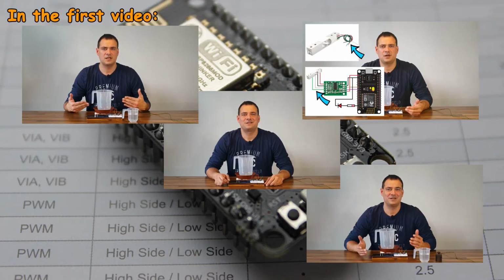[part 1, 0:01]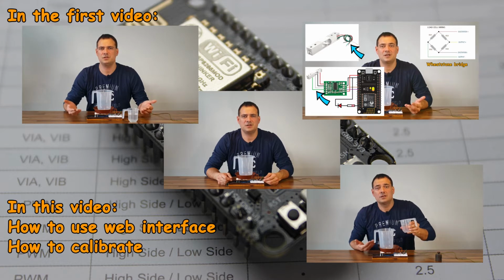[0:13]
In the previous video of this two-part series I showed you how to make a uroflowmetry device for yourself. If you haven't seen the video find it on my channel. In this video I will show you how to use the web interface, how to calibrate the machine and how to use the dedicated Windows program. Coming up!
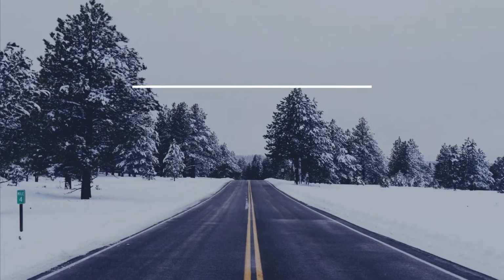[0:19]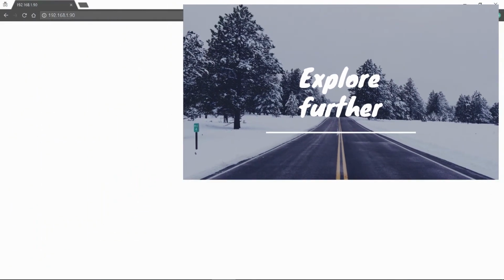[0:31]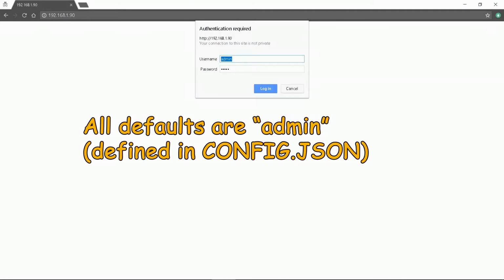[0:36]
We will start by entering the device address into a web browser. Uroflow will ask for the username and password. By default they are both admin. Click login. You enter them at first connection. The main site opens.
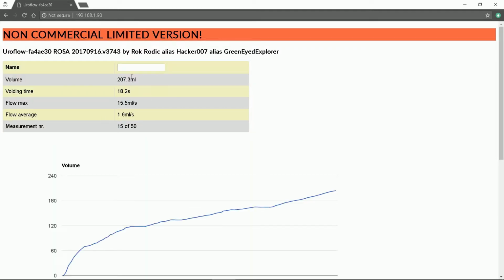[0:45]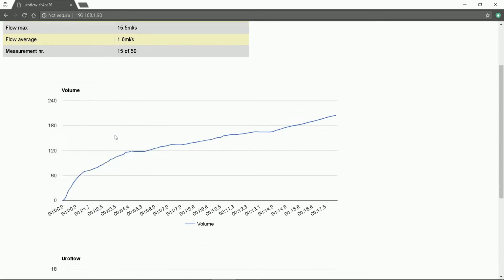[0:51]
Here is the medical report for the free Uroflow version. In the input box you can enter the patient name to make it complete. You can see both graphs. You can check the slopes by moving the mouse over it. Detailed information is displayed.
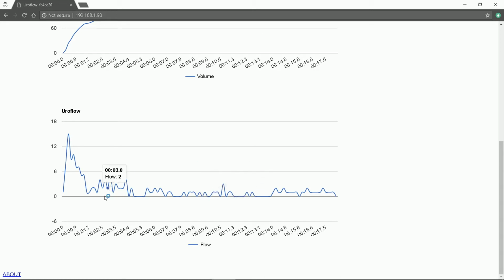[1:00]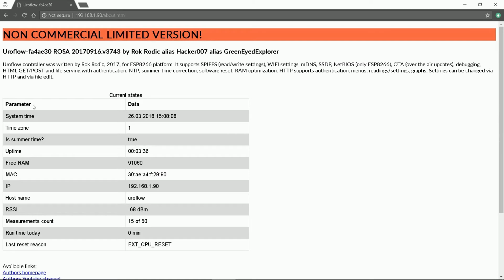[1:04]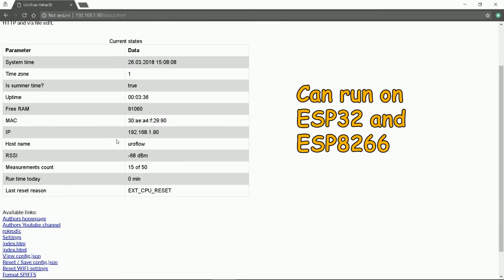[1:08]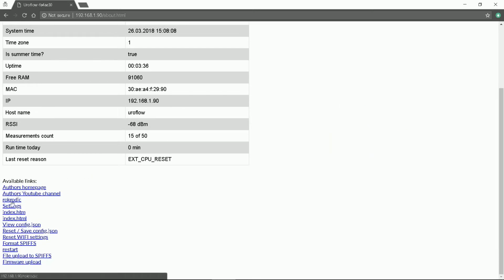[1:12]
At the bottom lies the About link. Click it. It opens the About page with some details about the processor. This demo firmware runs on Espressif ESP32. At the bottom we can see all available links. We will move into settings. Click it.
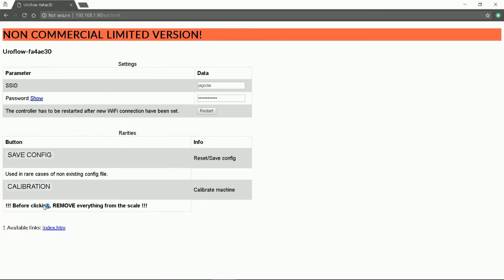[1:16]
Available options here are Wi-Fi settings, configuration and calibration which we want at the moment. Be sure to follow the instructions. Firstly remove everything from the scale. Press calibration.
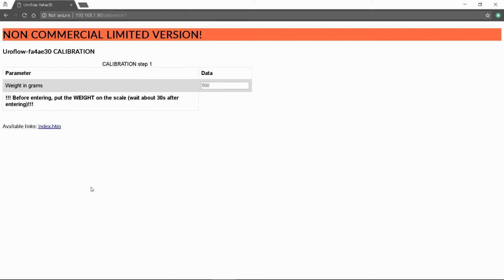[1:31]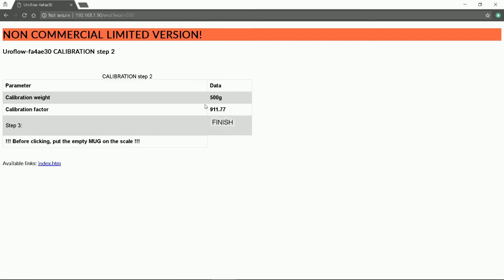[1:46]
Secondly enter your calibration weight but be sure to put the weight on the scale before pressing enter. After entering you have to wait approximately 30 seconds. At the end we finish with the calibration factor which has been saved into the configuration file by now. Lastly we just have to return our empty collecting mug on the tray. The Uroflow device will restart and you can start measuring.
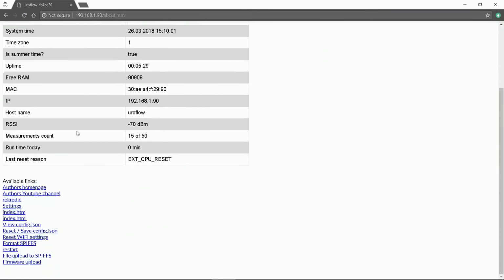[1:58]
The other options we have in the About menu are: View configuration. Reset the configuration. Reset Wi-Fi. Format file system. Restart. File upload.
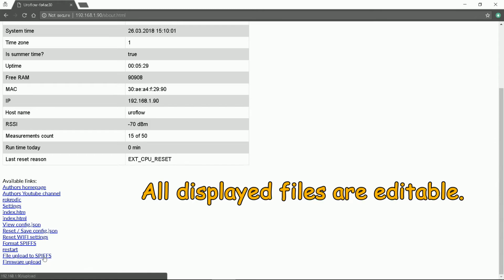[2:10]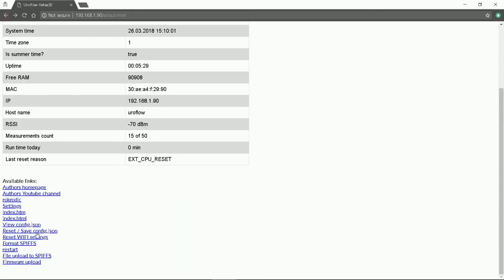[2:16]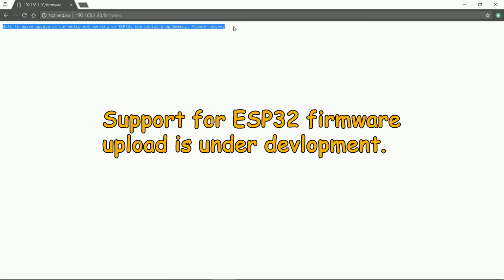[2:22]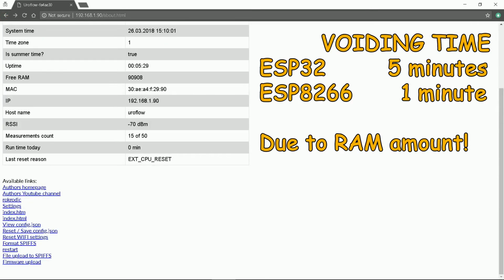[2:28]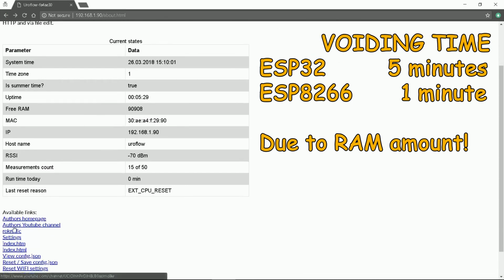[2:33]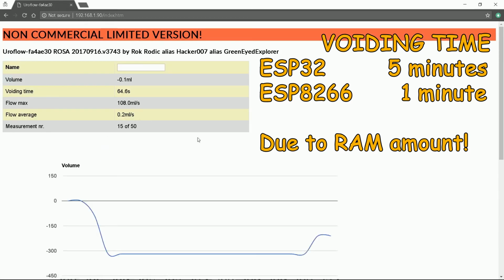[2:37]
If you edit any of the pages just upload new ones. And firmware upload. Due to the current state of the software development kit the firmware upload for now only works when using ESP8266. The main advantage of ESP32 is recording of 5 minute voiding time in opposite to ESP8266 where it is 1 minute. All due to the RAM they have.
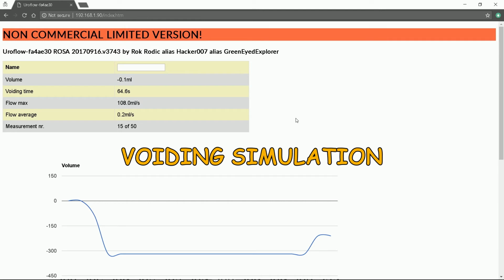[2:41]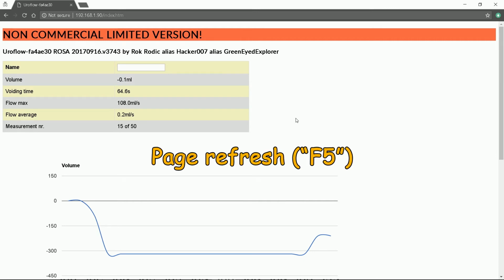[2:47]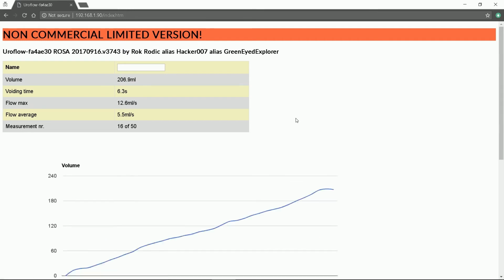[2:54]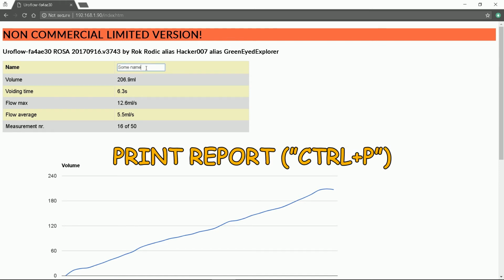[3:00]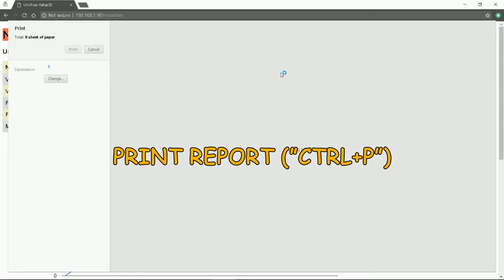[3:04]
Now I will simulate the patient voiding and pour water into the mug. When the LED turns off we just have to press page refresh. That is the F5 key. Here we can see the medical report. I will enter some name. Now we just have to press Ctrl plus P key for print preview and print it.
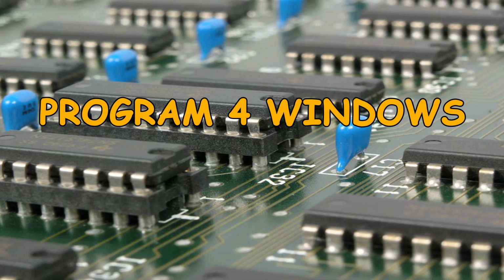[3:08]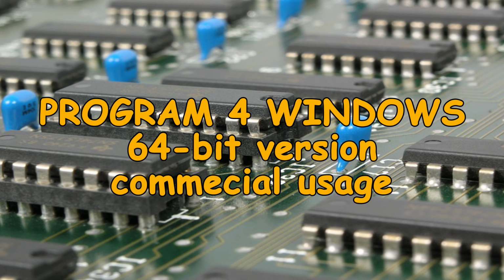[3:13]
Windows program. I wrote a 64-bit program for Windows. When you run it first click the connect button. Then enter patient name and year of birth. The program is still under heavy development. Now press the read button.
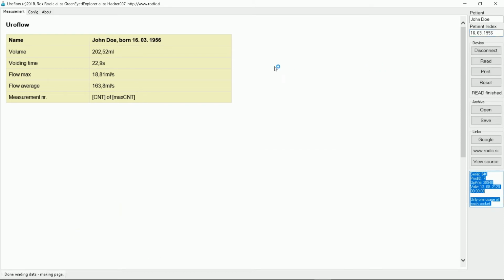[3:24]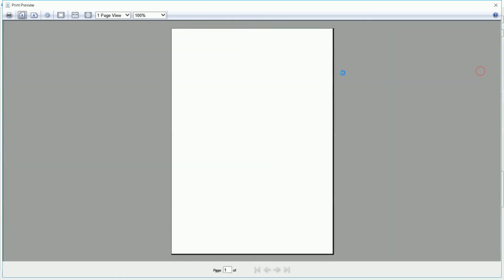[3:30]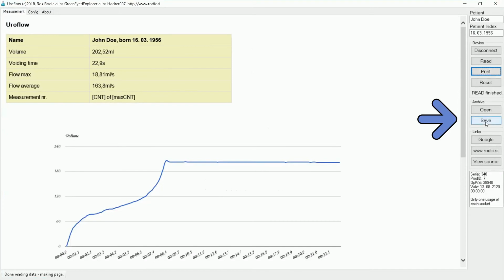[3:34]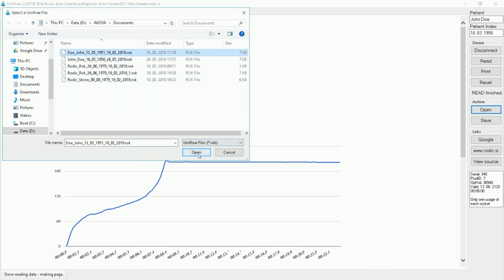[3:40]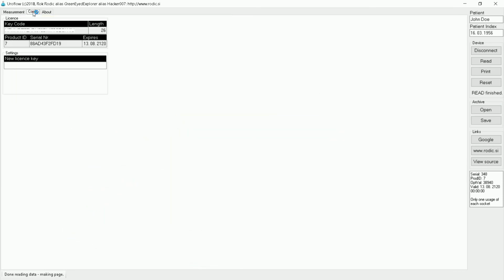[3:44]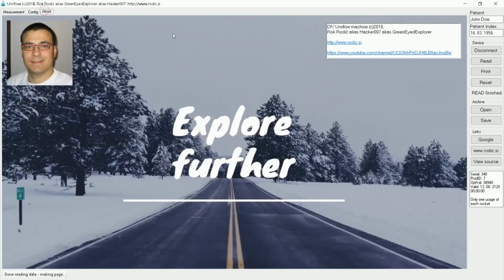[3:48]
The report contains all the data. Now you can print it. You can also save the data in a database. We will open a random previous flow from the database. See the data is different. Other options in the program are config with license key information and about menu.
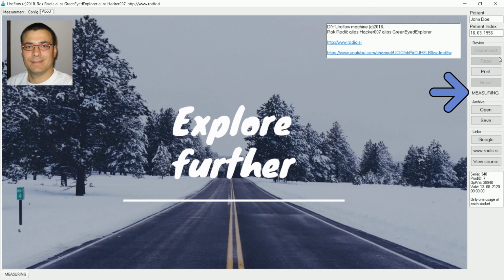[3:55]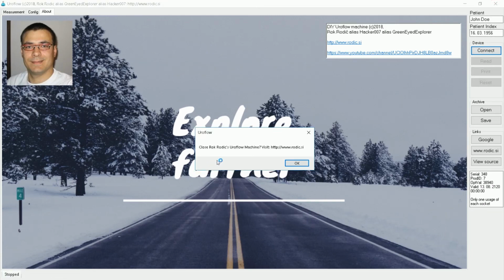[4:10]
Now I will touch the machine to simulate voiding to show you that the program gives you a notice when the patient uses the Uroflow. The read button is disabled while voiding. At the end of the day we just press disconnect and close the program. Here I have to mention the Windows program is intended for commercial usage.
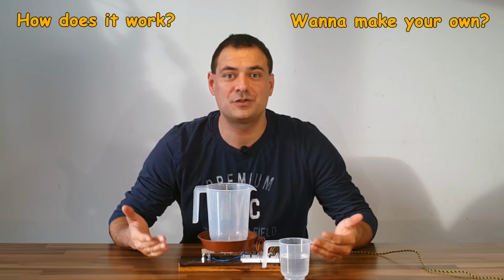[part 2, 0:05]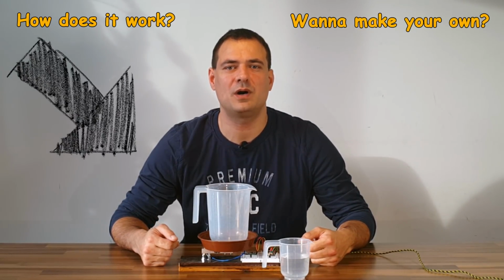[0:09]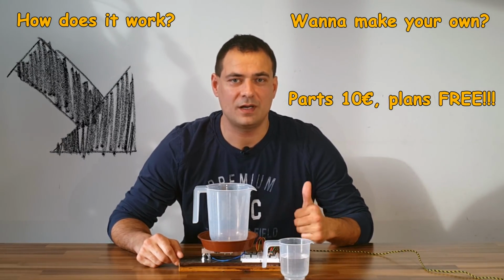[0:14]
Have you ever wondered how a uroflow machine works? Do you want to make your own? In this video I will show you how to make one for around 10 euros. This is video one of a two-part series. Coming up!
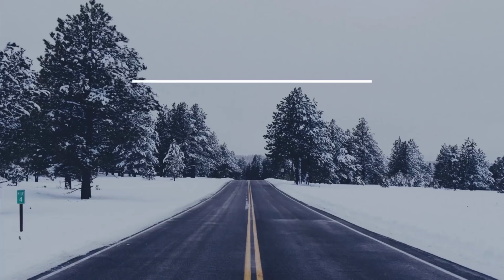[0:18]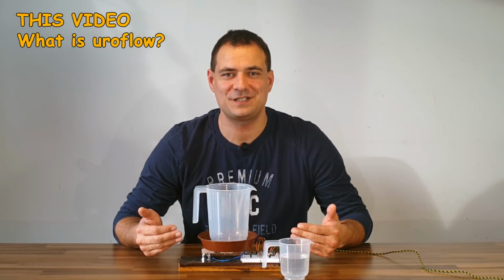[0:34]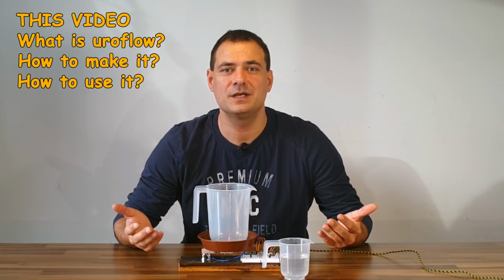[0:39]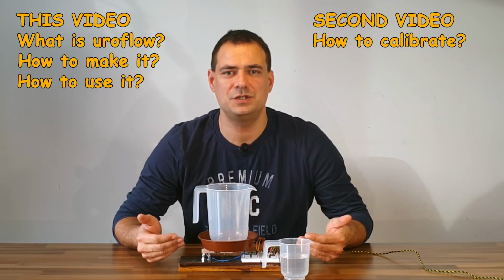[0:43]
In this video we will see what a uroflow machine is, how to make the machine and also see how to use it. In the second video we will see how to calibrate the machine and what my firmware offers.
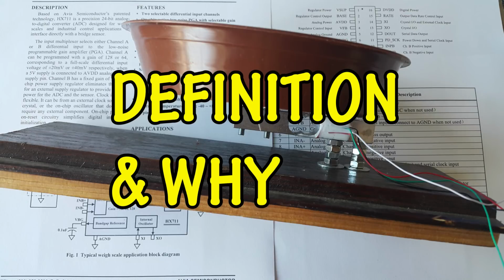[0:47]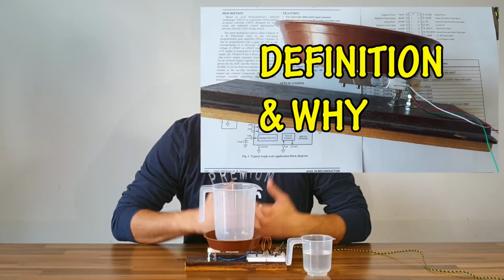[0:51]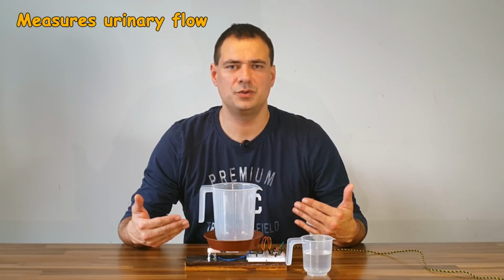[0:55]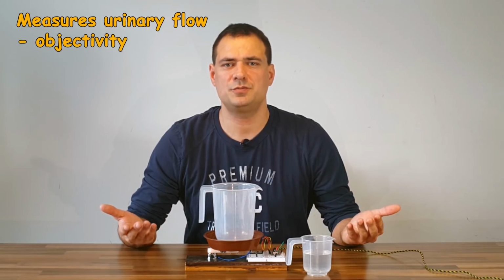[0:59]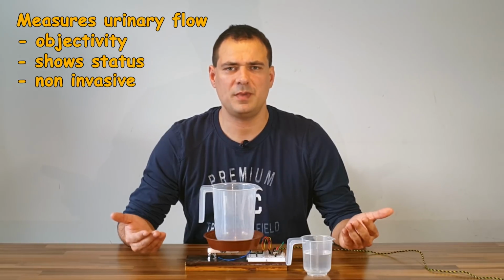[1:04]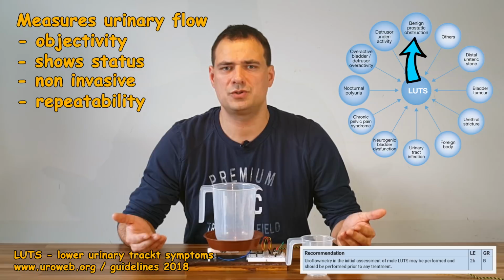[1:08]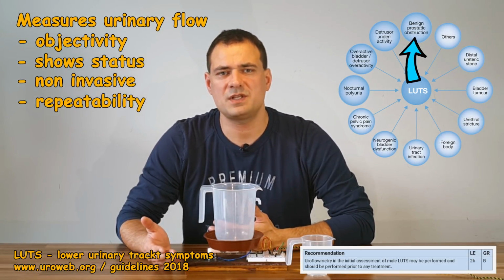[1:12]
Definition and why. First I will explain what a uroflow machine is. It is an appliance which measures how good your urinary flow is when emptying your bladder. It objectively shows patient status to a urologist. It can show many things. The most known is an obstruction, either due to benign prostatic enlargement or other reasons. It is one step of diagnostics called urodynamic studies.
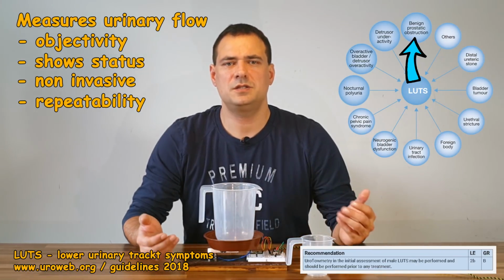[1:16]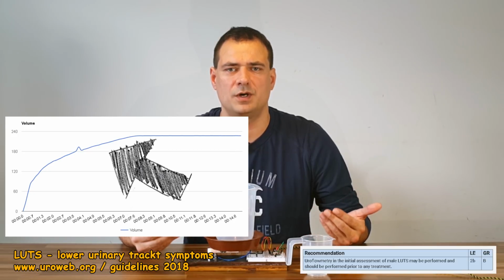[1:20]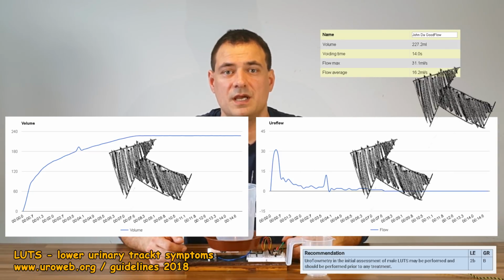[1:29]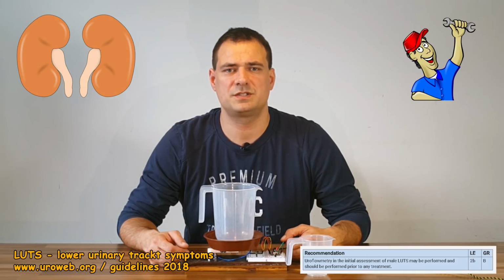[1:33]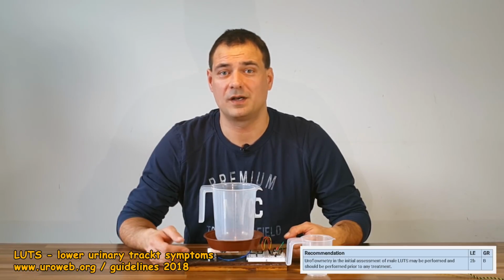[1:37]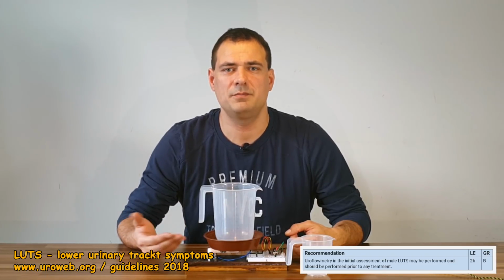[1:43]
It basically is a simple weight scale which shows volume of voided urine, increase of weight of urine in time in a format of flow per time, and some other parameters. As I am a neurologist by profession and electronics geek and handyman by heart, I was very keen on making one. My purpose here is to popularize this device among men as it can objectively reveal many problems.
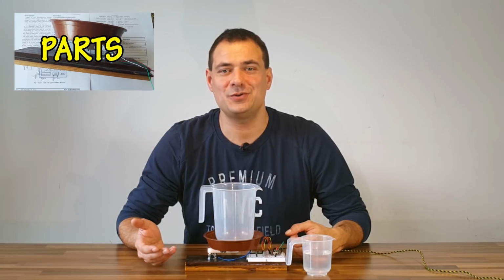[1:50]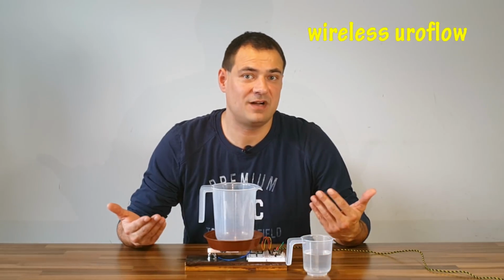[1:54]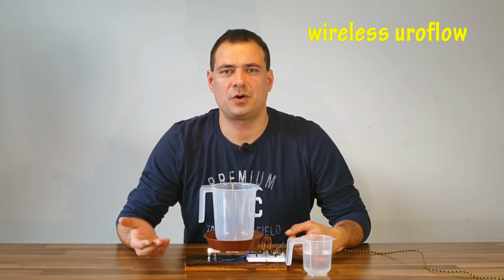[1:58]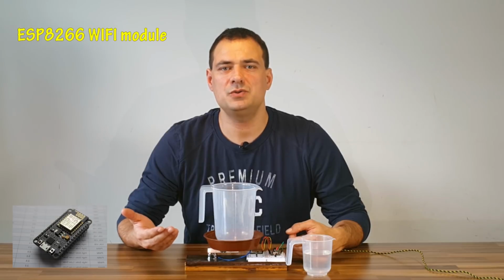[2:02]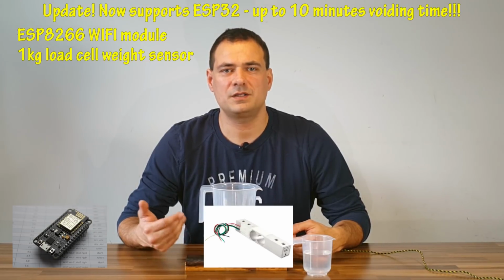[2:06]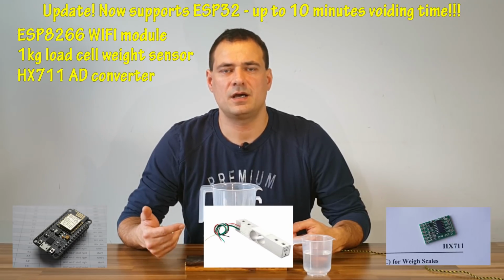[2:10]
Parts. I decided to show you how to make a wireless uroflow as an added value. It is even cheaper. Most commercial products are either wired or use Bluetooth. I will use an ESP8266 Wi-Fi module, a 1kg digital load cell weight sensor and an HX711 converter. Hardware is really simple and cheap.
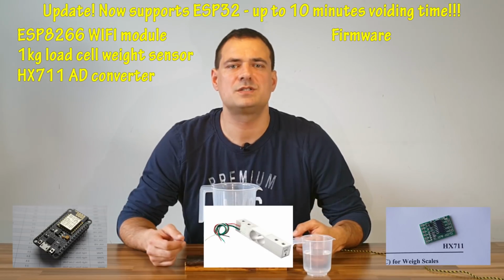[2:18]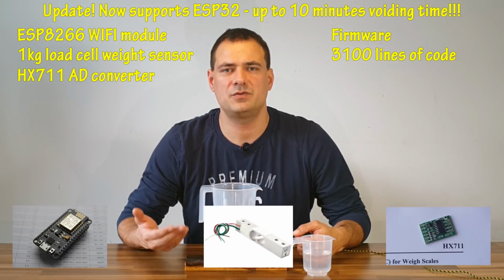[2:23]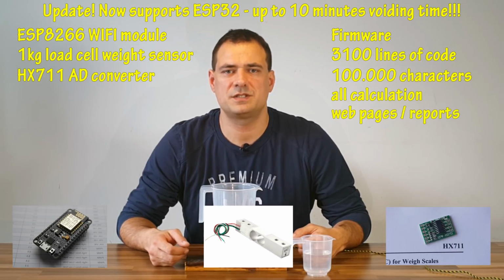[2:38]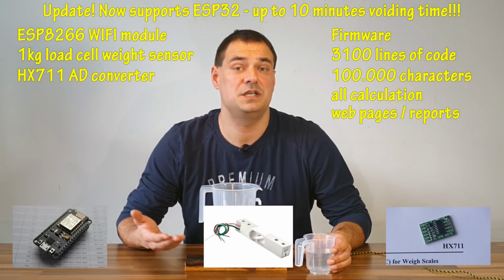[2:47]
The biggest challenge about making one was to write the program for it. It contains 3100 lines of code or 100,000 characters. It took me about 20 hours of programming and thinking. All the processing and calculations are done on the microcontroller itself. User just has to visit the web page and see the report and print it. No additional dedicated PC for the uroflow machine, which means even lower cost.
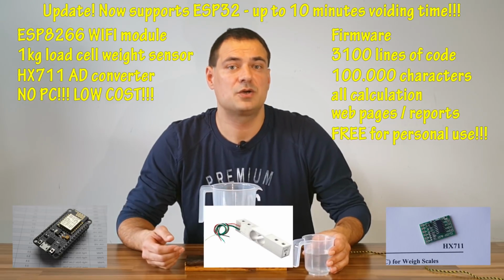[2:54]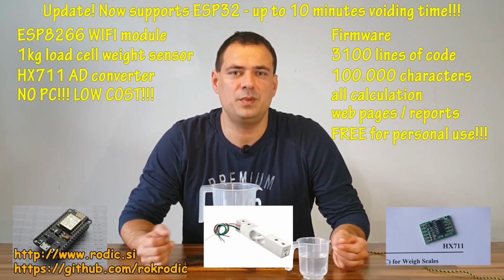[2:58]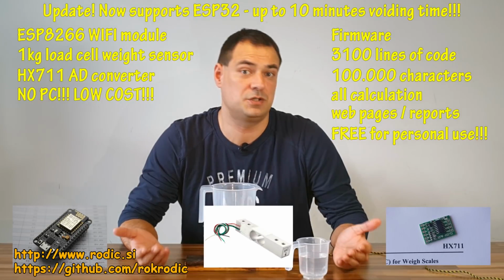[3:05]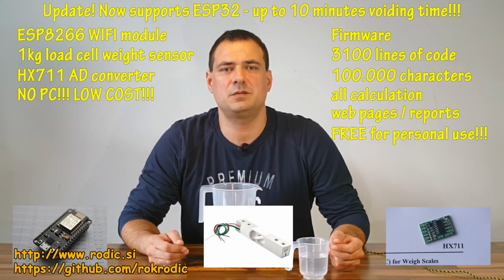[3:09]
I offer my schematics and firmware for free for personal use. Commercial usage is negotiable. Data can be found on my home page and my GitHub page. I also provide the version with nomograms for better interpretation and even a dedicated Windows program with database for storage.
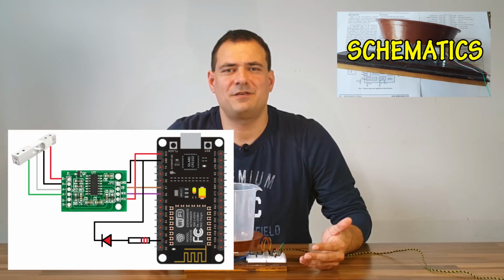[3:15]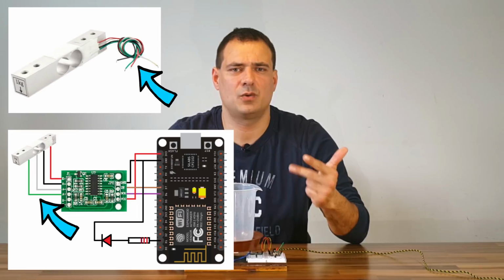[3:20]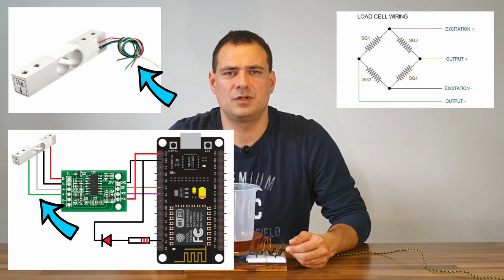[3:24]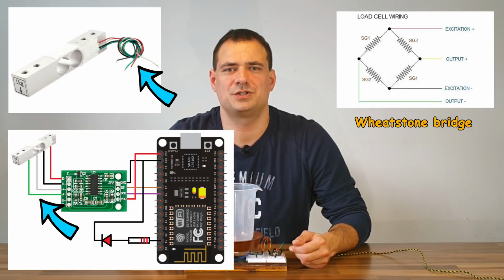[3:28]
Schematics. The schematic is very simple. The weighing element has four wires: red, black, white and green. They come from strain gauges on the load cell. Strain gauges are organized in a Wheatstone bridge. That's why there are four wires.
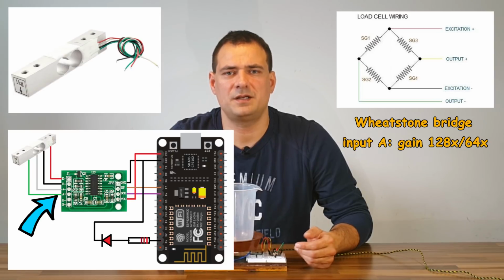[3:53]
They are connected to an HX711 chip. Red goes to E+, and the black one to E-. E's represent excitation. Meanwhile, white goes to A- and green wire to A+. They are inputs. A input can be programmatically defined as gain of 128 or 64 while input B has a fixed gain of 32. We will use input A with gain of 128.
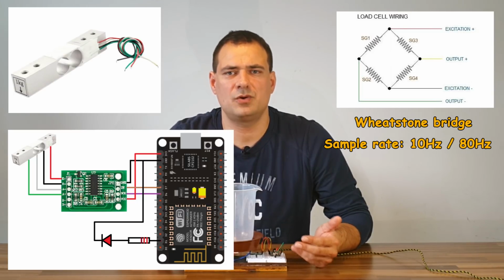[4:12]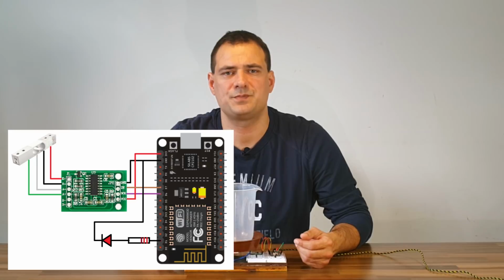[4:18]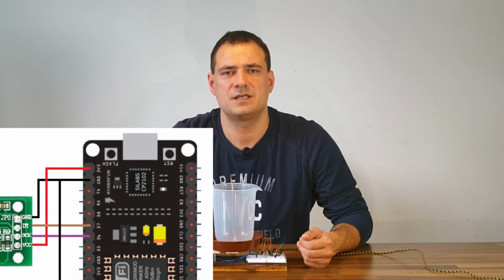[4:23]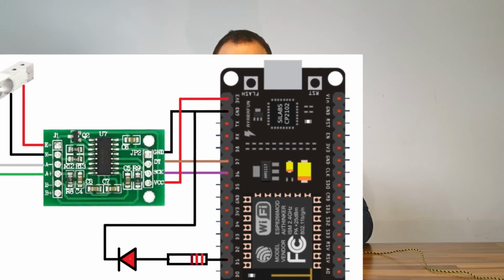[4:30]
Other selectable thing is sample rate. We can choose 10 or 80 Hz. I selected 10 Hz as it has lower noise and gives enough precision. Connection to microcontroller has two communication lines, clock and data line. The only other thing used in this version of the machine is a red LED which lights when there is an ongoing measurement or calibration procedure. Calibration procedure is also initiated via Wi-Fi.
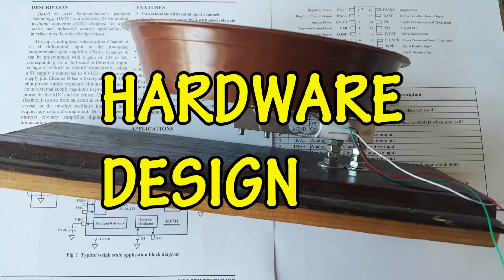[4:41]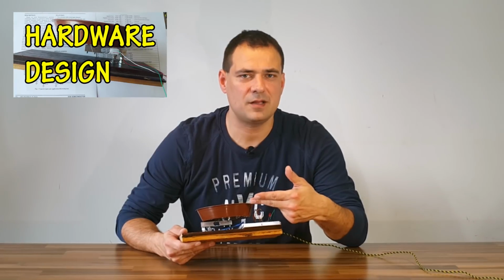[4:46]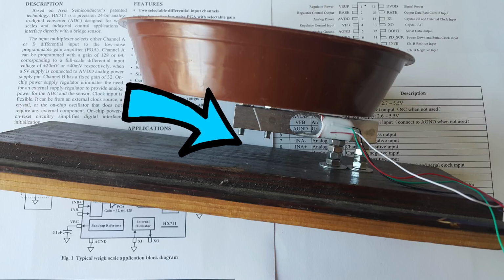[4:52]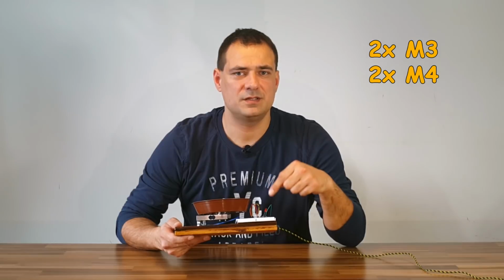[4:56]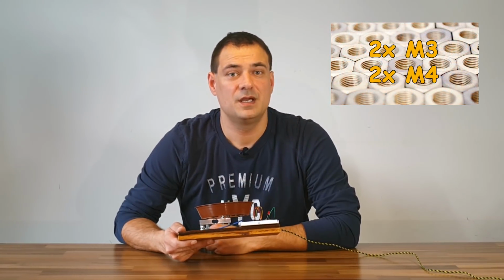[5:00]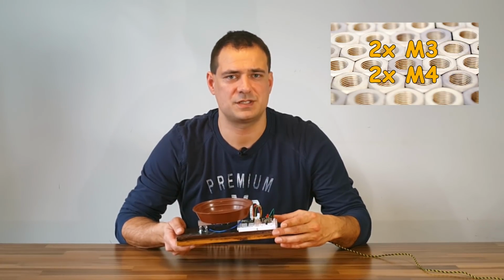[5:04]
Hardware design. Here you can see how a weighing element is mounted. Tray is on the upper side of the weighing element. The other side is mounted to the bottom plate. You will need two M3 and two M4 screws and some nuts for spacers. You can see the prototype uses breadboard for connections. If you want to buy parts, the links are in the description below.
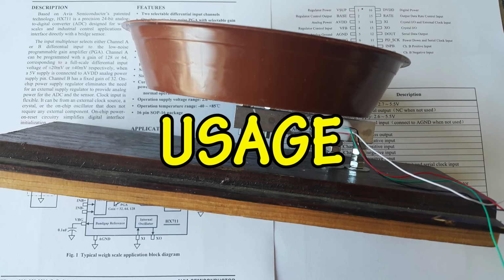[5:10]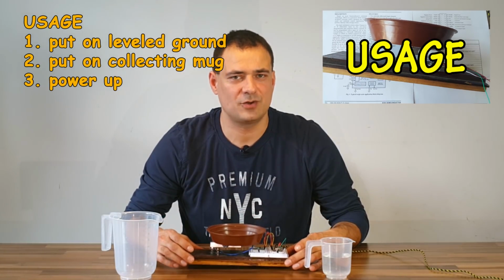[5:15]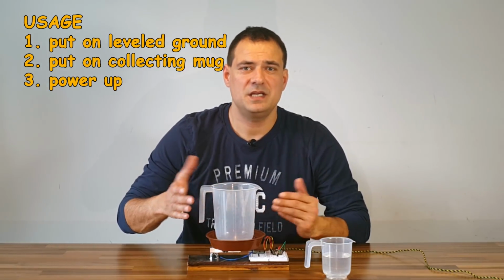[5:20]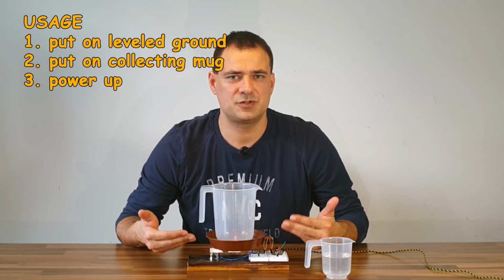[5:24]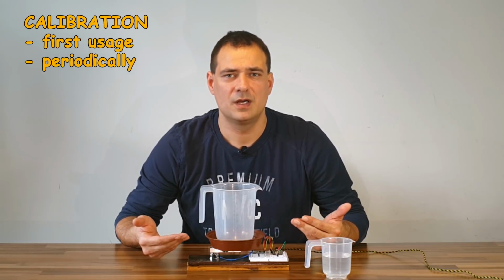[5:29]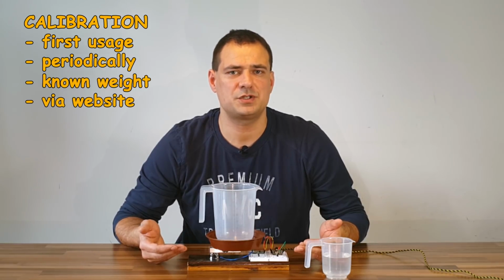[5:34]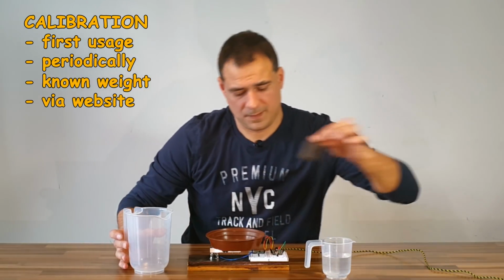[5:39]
How to use? First you will have to put the appliance on a level ground. Put a collecting mug on the tray. If it is heavy, leave it there for a few minutes for the load cell to stretch. If you use the machine for the first time or want to recalibrate it after a certain period of time, you initiate the calibration procedure with a known weight via Wi-Fi. The calibration parameters are stored in the machine itself.
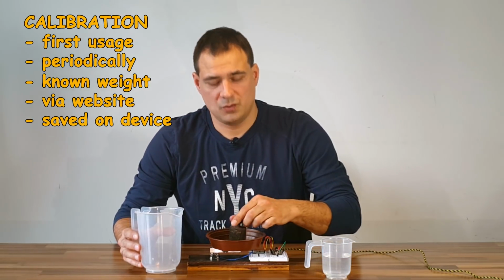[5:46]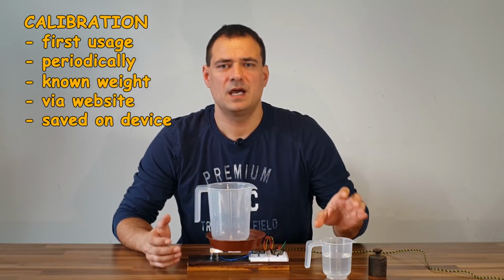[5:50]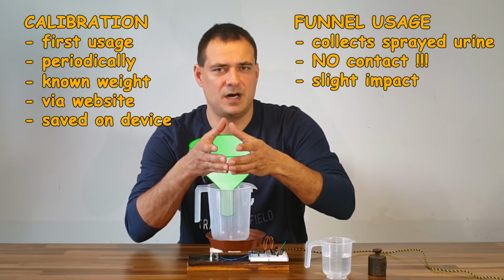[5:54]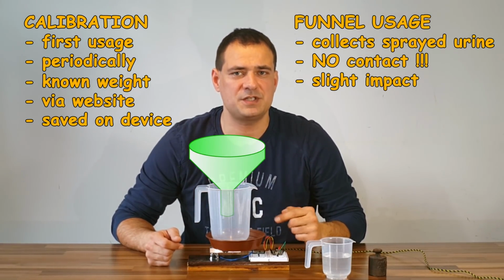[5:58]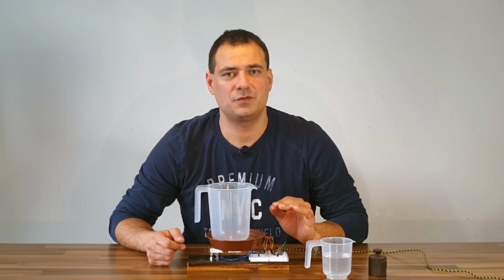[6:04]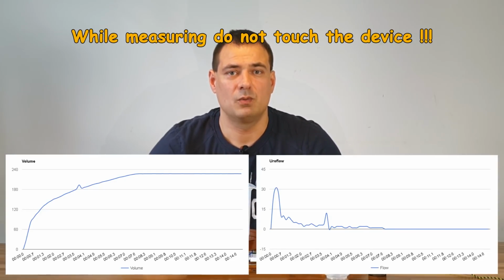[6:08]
When measuring the urinary flow, you have to use a wide funnel which does not contact the mug or the device. Funnel collects split or sprayed stream and makes just a slight impact on the measurement. The other important thing is not to touch the device in any way while voiding, touching makes artifacts.
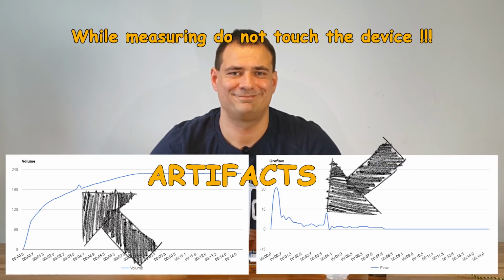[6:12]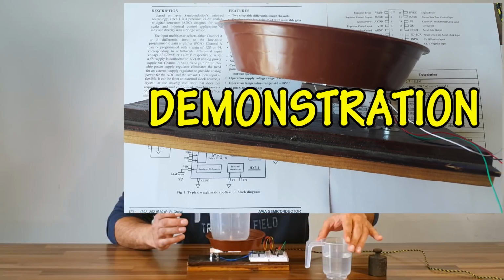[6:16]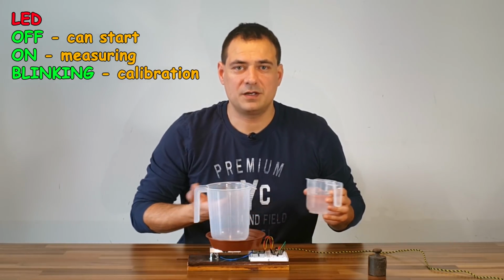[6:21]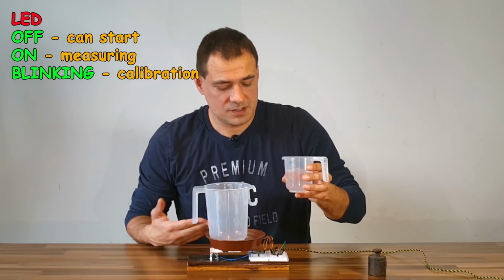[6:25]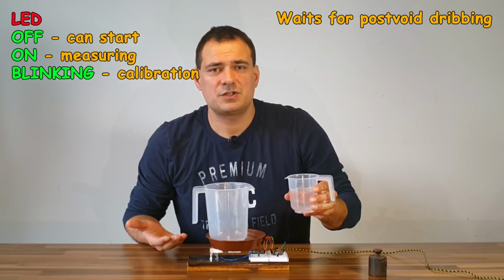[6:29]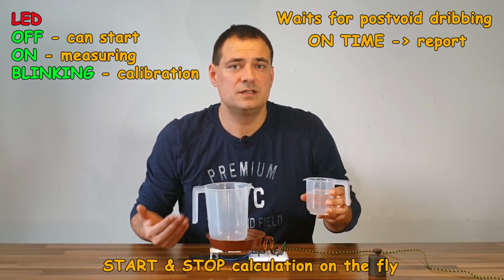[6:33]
Demonstration. Now I will demonstrate the usage. If the LED is off, one can start. While voiding, the LED is on. The machine even waits for eventual post-void dripping and stops after a certain time. The on time will be presented on the report. Start and stop are calculated on the fly.
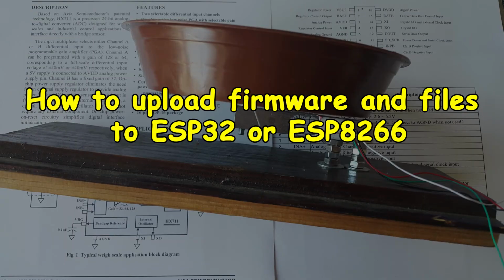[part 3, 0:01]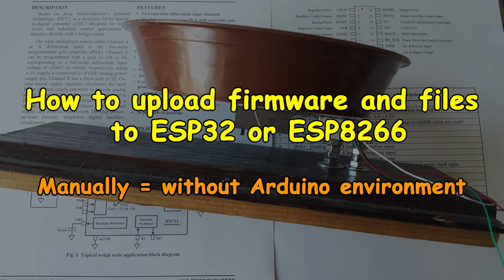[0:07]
In this video I will show you how to upload firmware and files to your ESP32 or ESP8266 microcontroller manually, without Arduino environment.
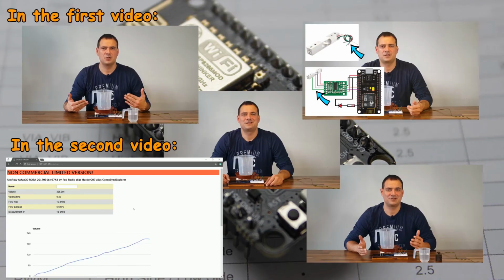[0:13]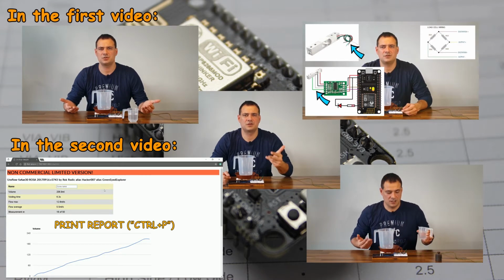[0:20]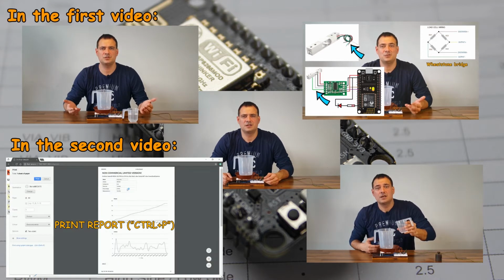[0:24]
In my previous videos of this series I showed you how to make your flowmetry device, how to calibrate it, how to use the web interface and a dedicated Windows program. If you haven't seen the videos, find them on my channel.
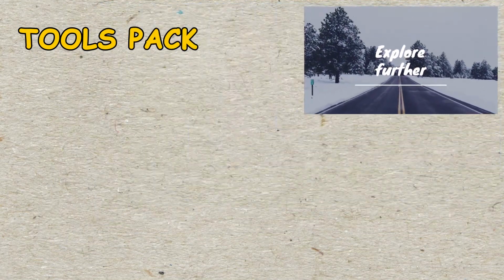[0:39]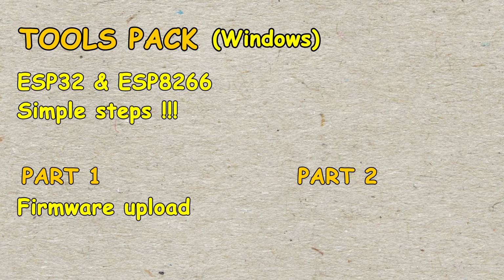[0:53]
I prepared a tools pack for programming both ESP32 and ESP8266 boards under Windows operating system. Steps are simple. I divided them into two parts. In the first one I explain how to upload firmware and in the second one how to upload website files.
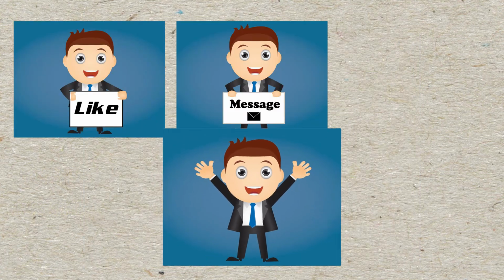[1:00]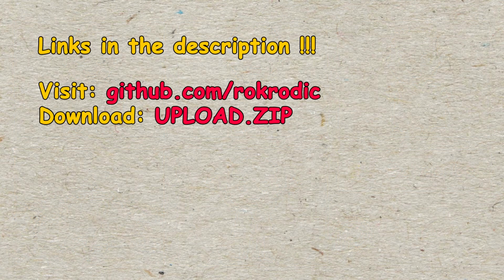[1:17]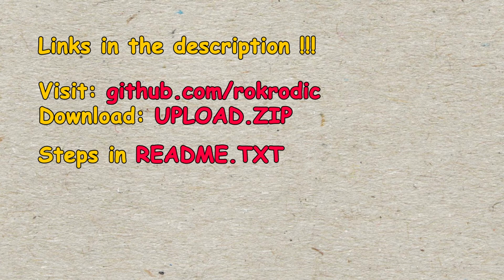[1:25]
You will have to visit my GitHub page and download the upload.zip file and unpack it. All the steps here are described in the readme.txt file.
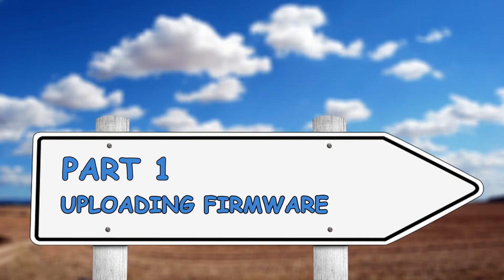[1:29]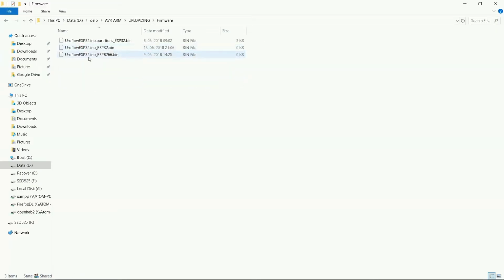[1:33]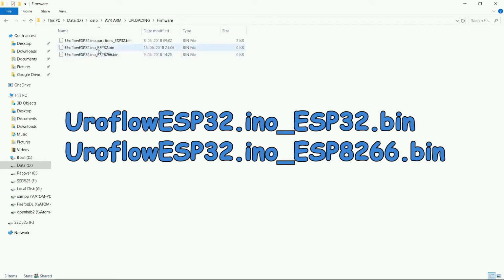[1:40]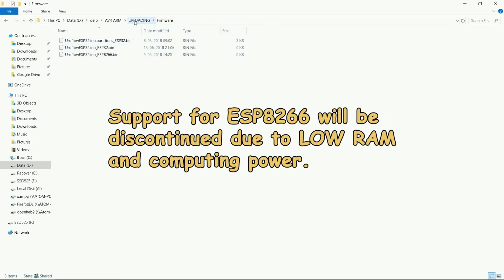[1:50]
Part 1. Uploading firmware. Firstly, go into the firmware folder. Here is the place you copy your latest firmware.bin file. Make sure it has the same name as the ones seen here. One ends with ESP32 and the other with ESP8266. It depends which microcontroller you use. The support for ESP8266 will be discontinued in the near future due to low RAM and computing power.
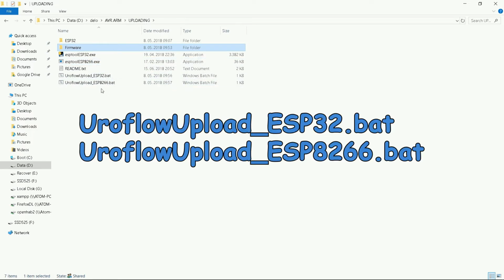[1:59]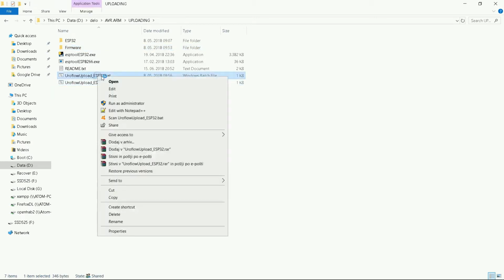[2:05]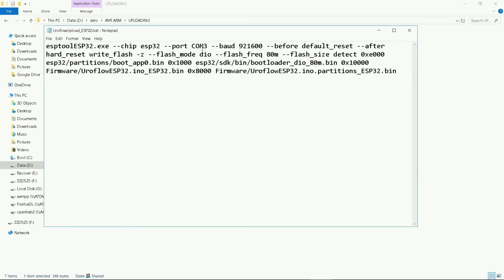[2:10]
The main files you will execute are the ones seen here. Before you start, you will have to make a small change. Right-click the .bat file and click Edit. You will have to change your communication port after connecting the device with a USB cable to your computer.
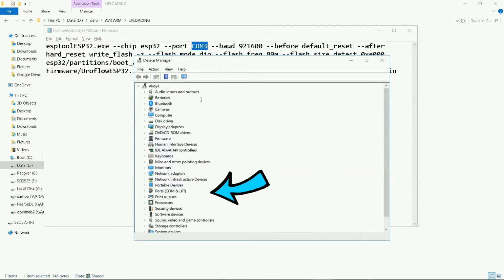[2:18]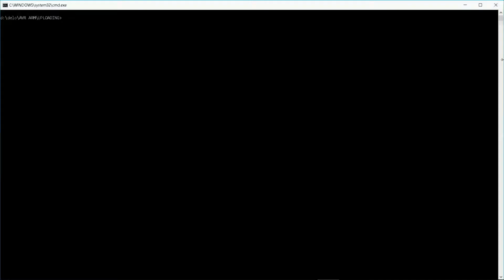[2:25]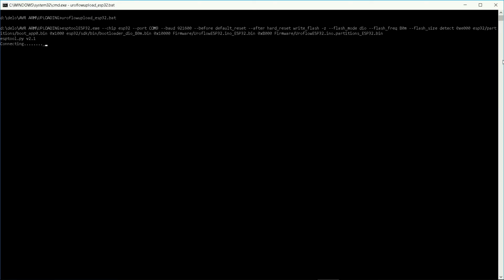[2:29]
If you do not know it, run Device Manager. Go under the ports and find the COM port. Now just run the appropriate .bat file. Here you can see what it should display if everything goes well. Basically, what the .bat file does is run the following command.
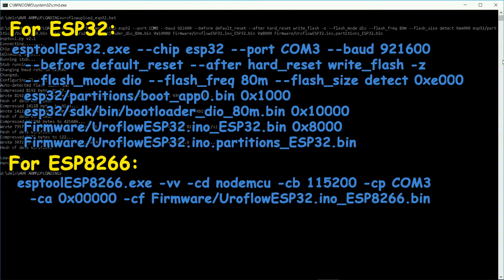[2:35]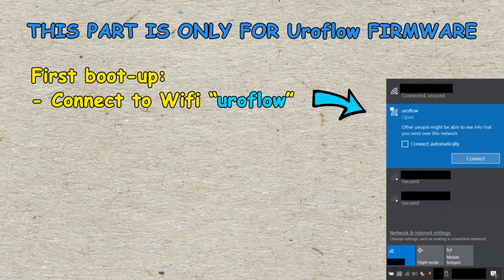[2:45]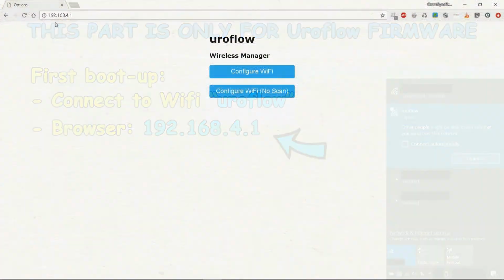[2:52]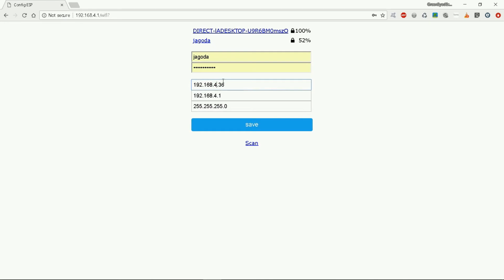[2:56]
Part 2. Uploading website files. This part only works with Uroflow firmware. At first boot up, the device will generate its own Wi-Fi network called Uroflow. Connect to it and enter the following address into your web browser. You will be able to enter your home Wi-Fi settings for your machine to automatically connect to it.
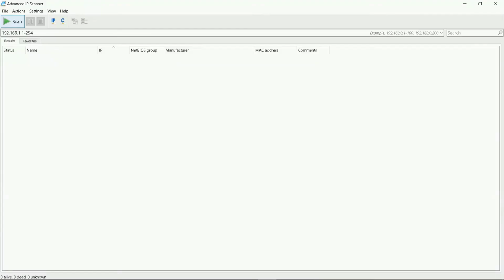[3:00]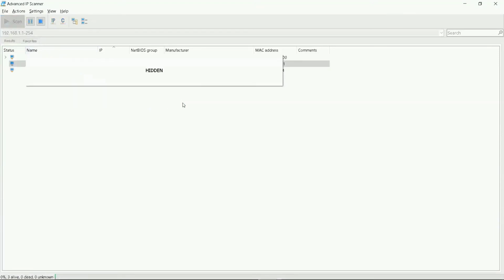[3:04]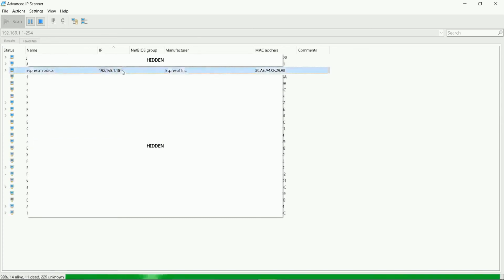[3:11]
The next step is to find your device's IP address. Here you can see the output of Advanced IP Scanner for Windows. After clicking Scan, you will see the Espressif Inc. device. This is your IP address.
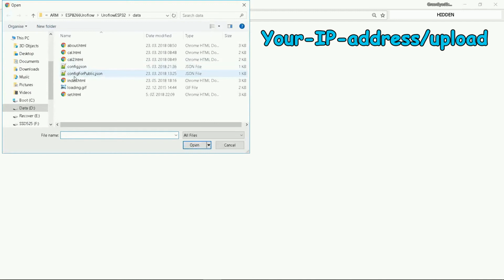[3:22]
At first access to your device address via web browser under your home Wi-Fi, it will display file not found. You will have to upload files. Enter into your browser the IP address slash upload. Mind the slash upload.
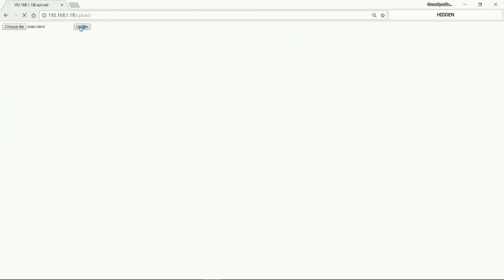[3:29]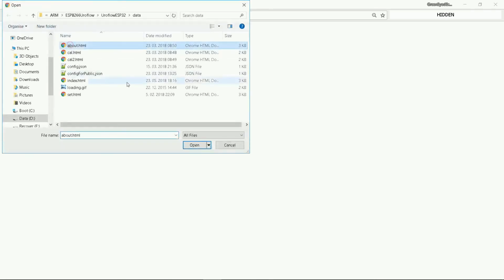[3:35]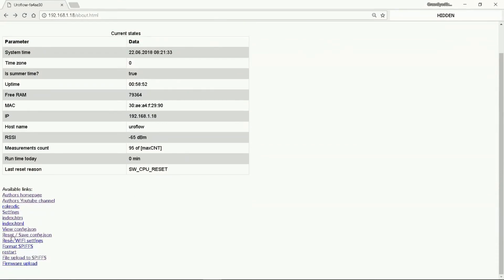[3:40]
Here you can select each file one by one and upload it to your file system. You will have to repeat the procedure for all the files in the data.zip. Only the config.json file is automatically generated, but it can be overwritten too.